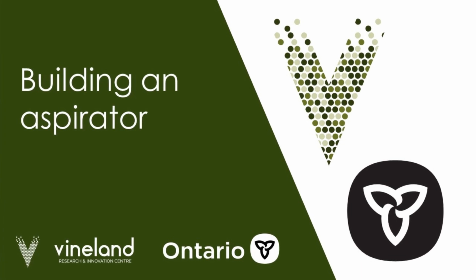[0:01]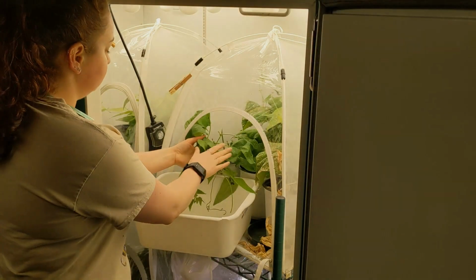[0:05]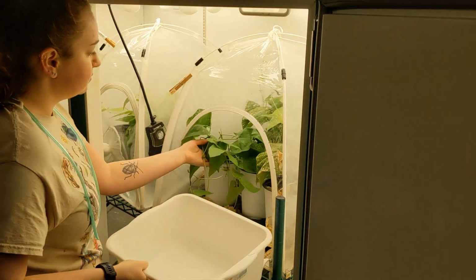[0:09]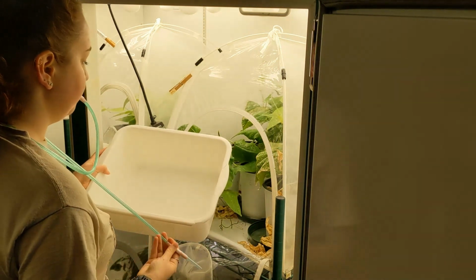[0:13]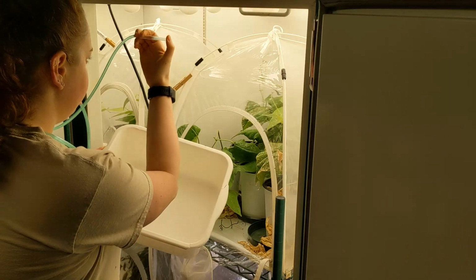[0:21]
In this video, we will demonstrate how to build an aspirator. An aspirator is a vacuum device that will help you collect thrips and other small insects. Typically, aspirators are made from tubes and vials and use either your mouth or a bulb to generate suction, although battery-operated aspirators also exist.
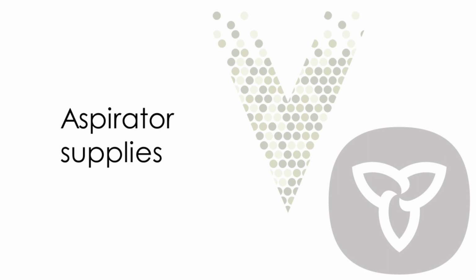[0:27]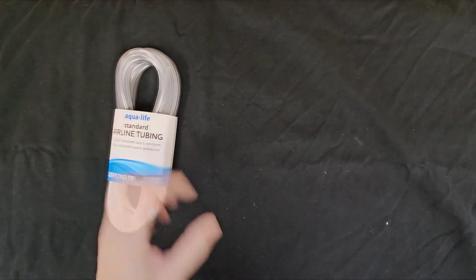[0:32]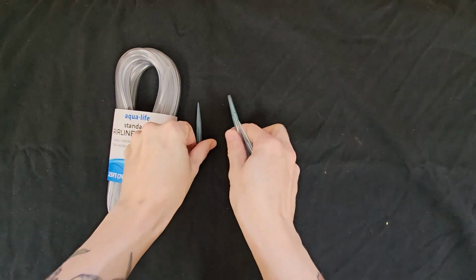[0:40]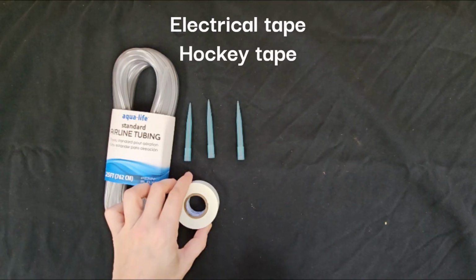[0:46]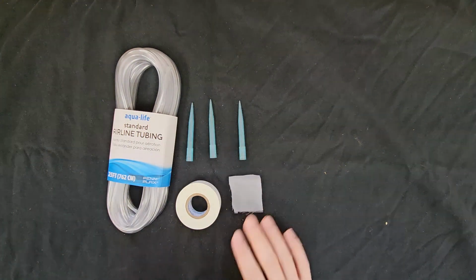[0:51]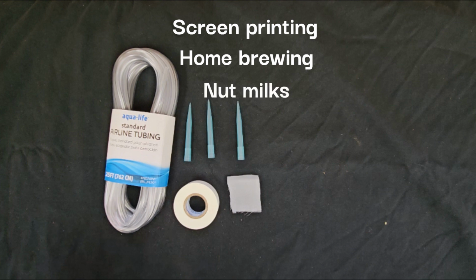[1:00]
The supplies you'll need to make an aspirator can be found online, such as on Amazon. You'll need 0.5 meter to 1 meter of silicone tubing, such as tubing used for aquarium air pumps, three 1-milliliter pipette tips, tape. You can use electrical tape, hockey tape, or any kind of tape that will stay secure over time, a stamp-size square of fine mesh fabric. This can be nylon mesh for screen printing, home brewing, nut milks, or aquarium filter bags, etc., and scissors.
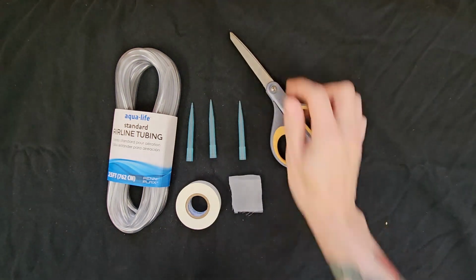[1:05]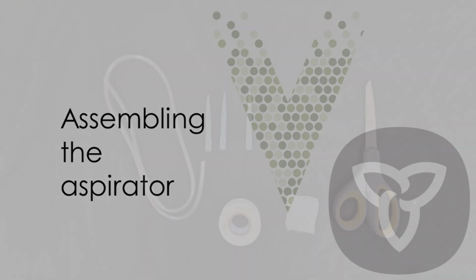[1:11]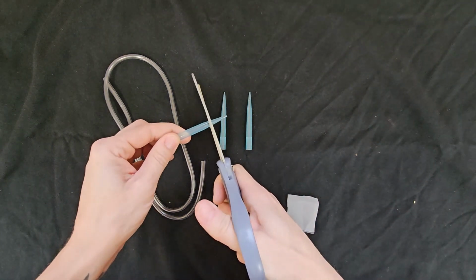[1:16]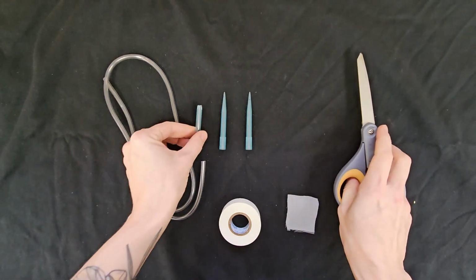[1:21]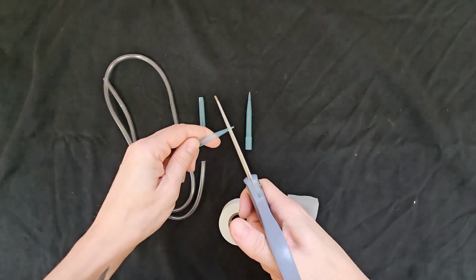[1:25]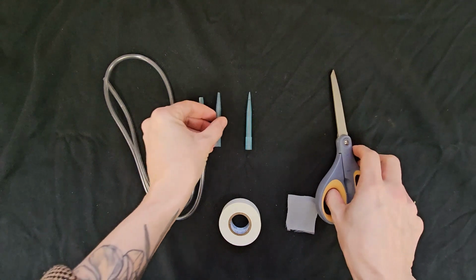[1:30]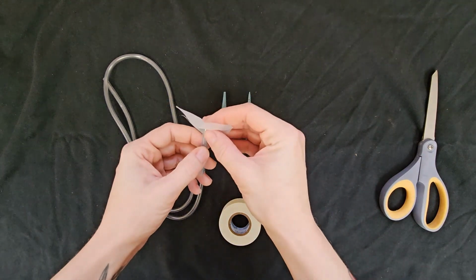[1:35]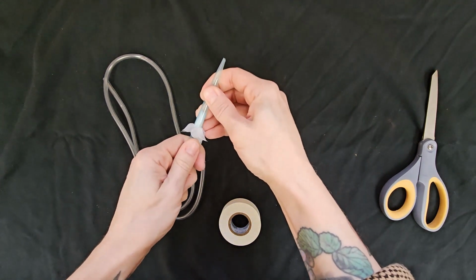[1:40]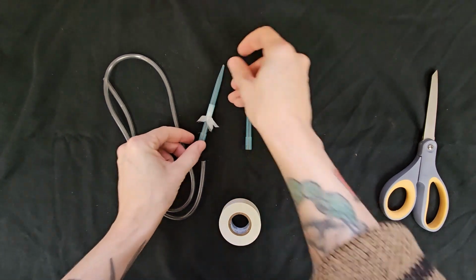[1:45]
To assemble the aspirator tip, trim approximately 2 centimeters off the first pipette tip. Next, trim approximately 3 to 5 millimeters off the end of the second pipette tip to create a wide enough opening for insects to pass through easily. Then take the square piece of mesh and place it over the end of the pipette tip with the larger cut end. Insert this pipette into the large end of the second pipette. If the fit is not tight, secure the two together with a piece of tape.
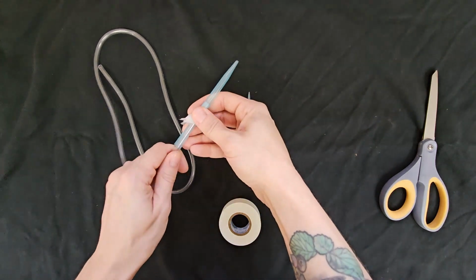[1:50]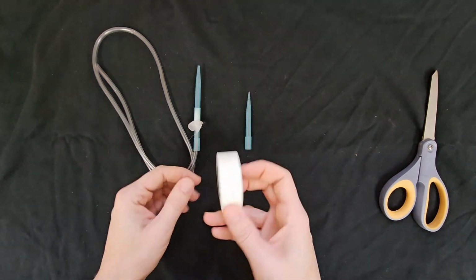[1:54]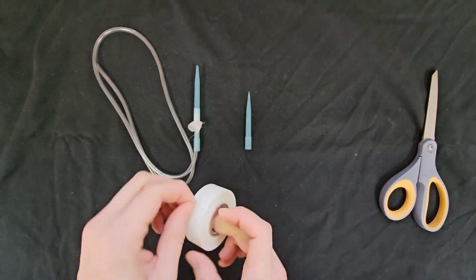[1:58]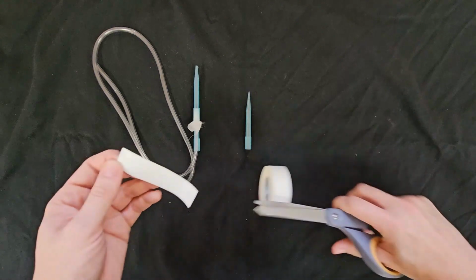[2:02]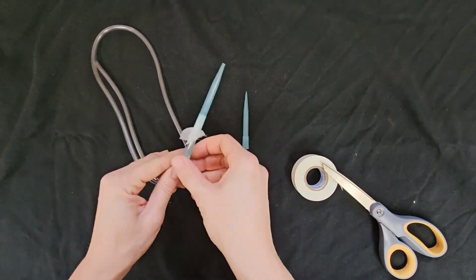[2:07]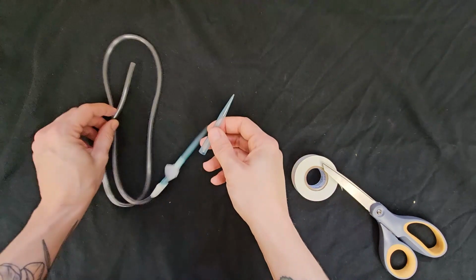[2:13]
Next, take the length of tubing and insert one end of the tubing into the bottom of the aspirator tip that you just made, and secure this with tape where the tube and tip meet. You want this piece of tubing to be about 0.75 to 1 meter long so that you can comfortably wear it around your neck. Next, assemble the mouthpiece.
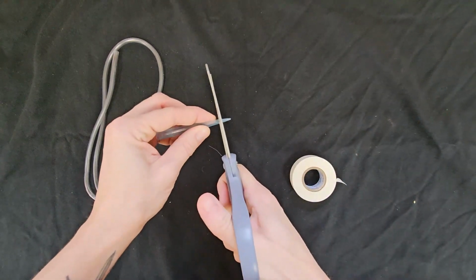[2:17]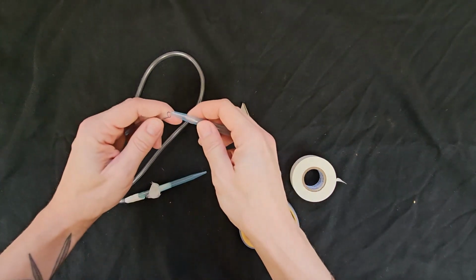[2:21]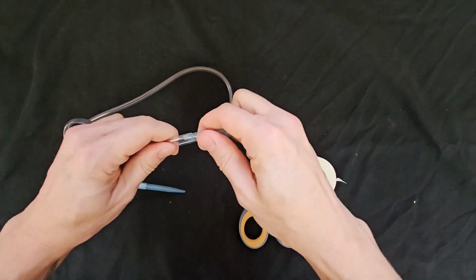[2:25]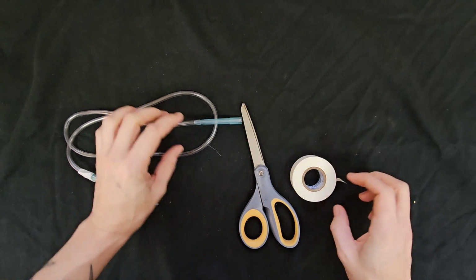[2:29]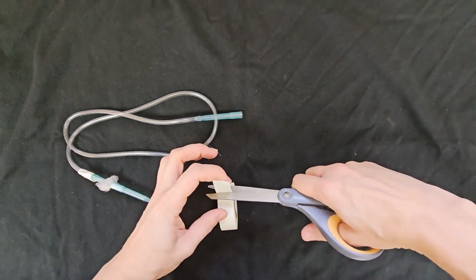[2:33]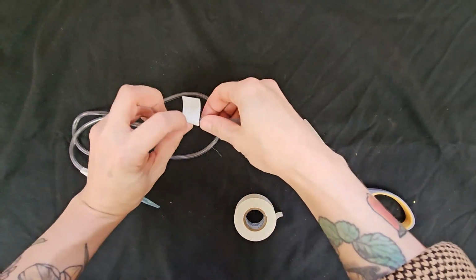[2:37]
To do this, trim 1 centimeter off the end of the third pipette tip. Insert the cut end of this pipette into the open end of the tubing, pushing hard to make sure that it is well secured, and also secure it with a piece of tape. You now have a functional aspirator.
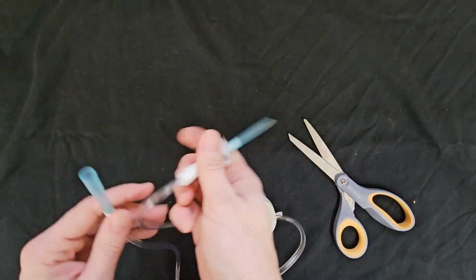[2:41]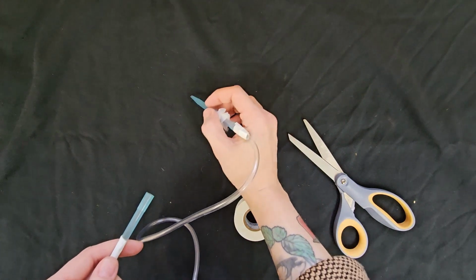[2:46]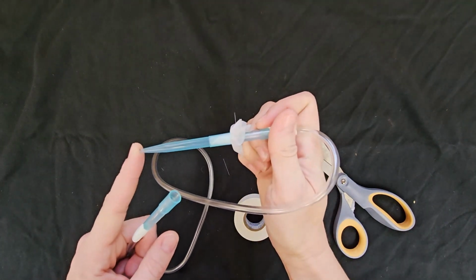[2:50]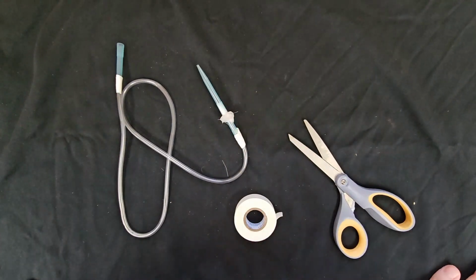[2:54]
To use it, place the wide-ended pipette in your mouth and use the other end to suck up the thrips of interest. Cover the end of the aspirator tip with your finger when you are not applying suction to prevent insects from escaping.
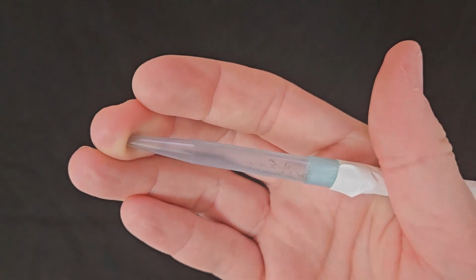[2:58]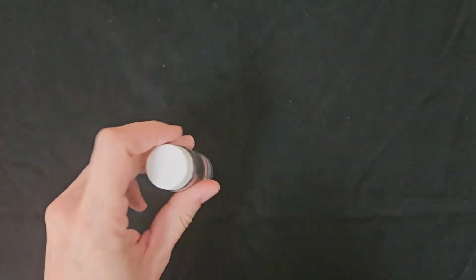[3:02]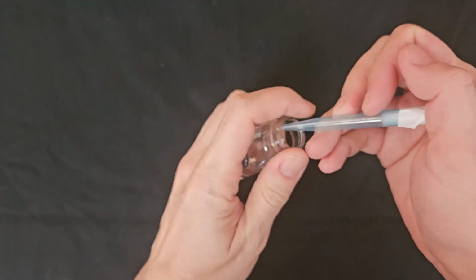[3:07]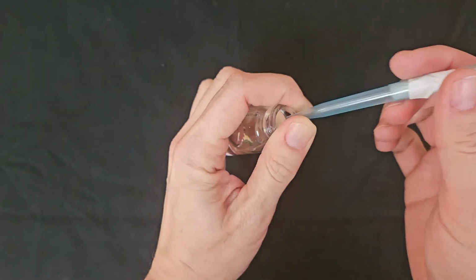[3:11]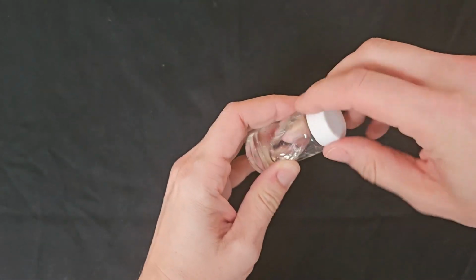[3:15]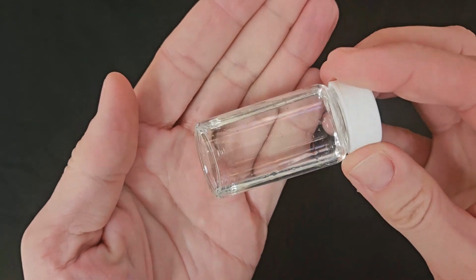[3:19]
Once you have collected your insects, you can transfer them into a vial of ethanol. Tap or flick the side of the aspirator tip as you blow gently to dislodge insects into the vial. You can store the insects in the vial of ethanol for identification later.